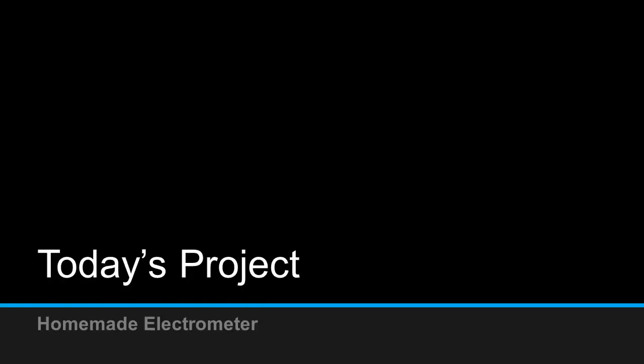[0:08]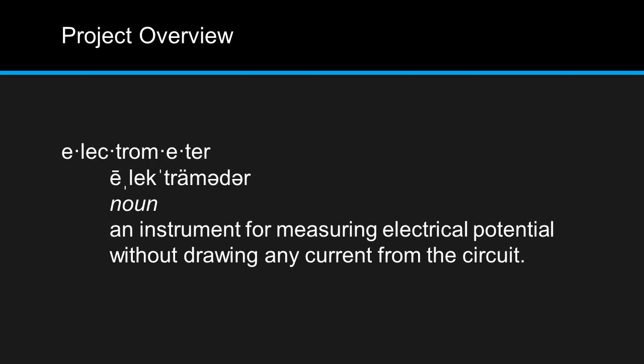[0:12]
Today's project will be a homemade electrometer. An electrometer is an instrument for measuring electrical potential, or static charge, without drawing any current from the circuit involved.
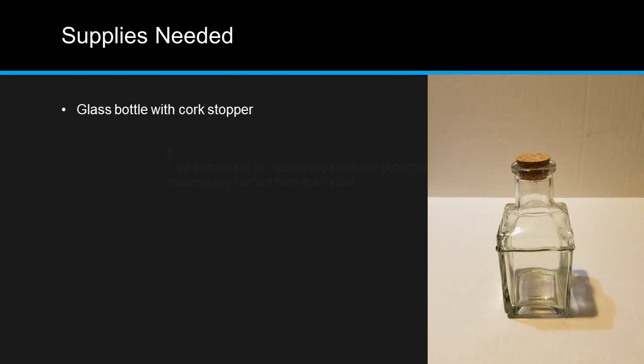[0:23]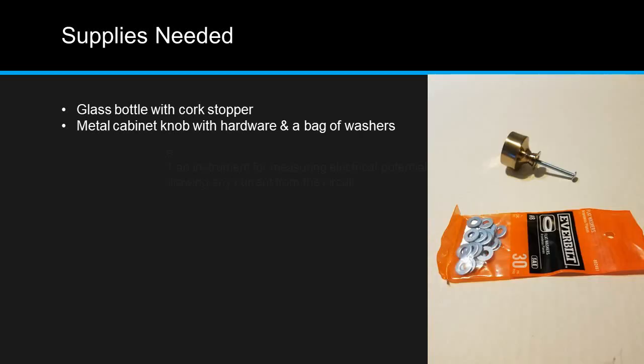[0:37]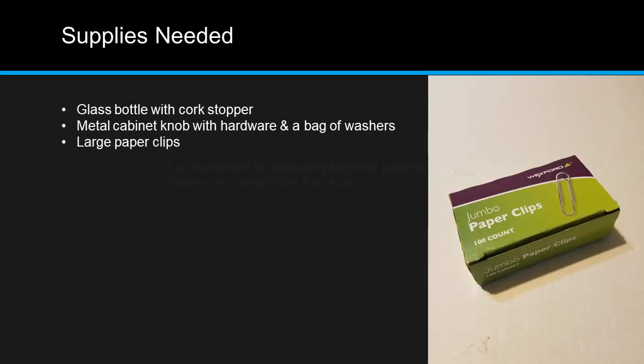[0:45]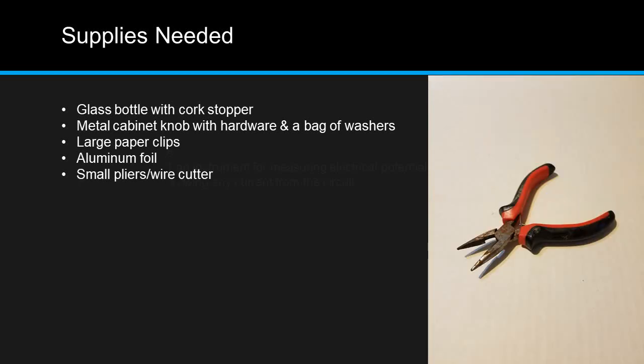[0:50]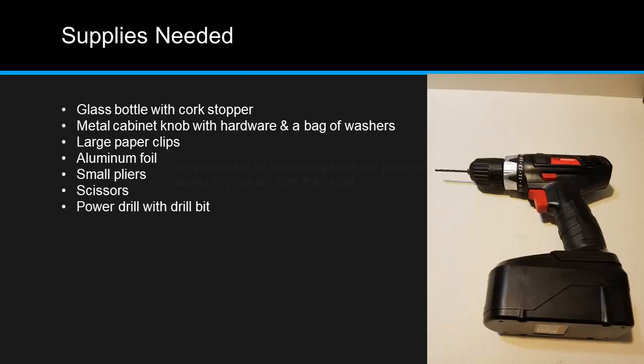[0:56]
The supplies you'll need for this week's experiment are as follows. A glass bottle with a cork stopper. I got this one at a local craft supply store for about $2. A completely metal cabinet knob with its associated screw and a bag of washers. Some large paper clips. Some aluminum foil. Small pliers with a wire cutter. Scissors. A power drill with a drill bit slightly larger than the screw that came with the cabinet knob.
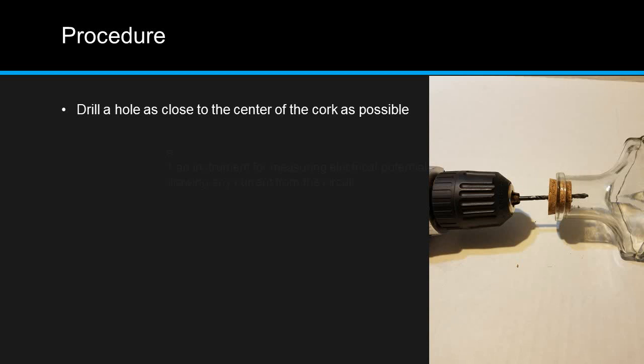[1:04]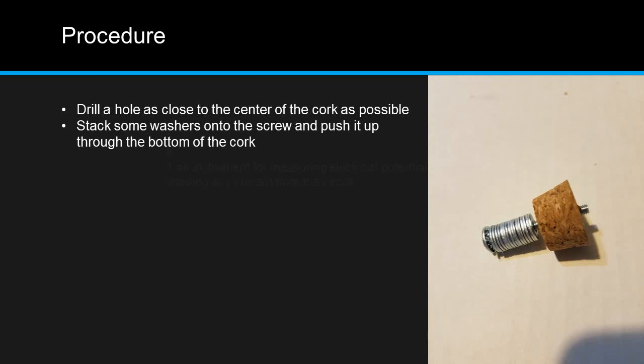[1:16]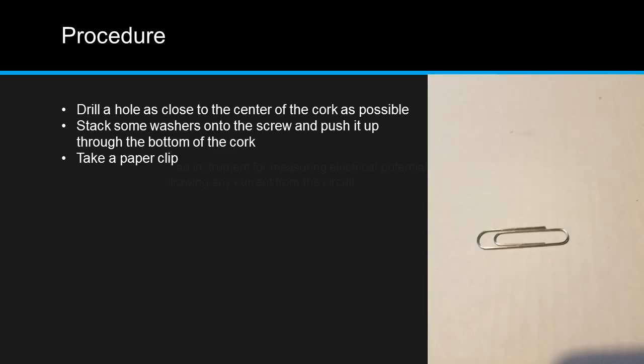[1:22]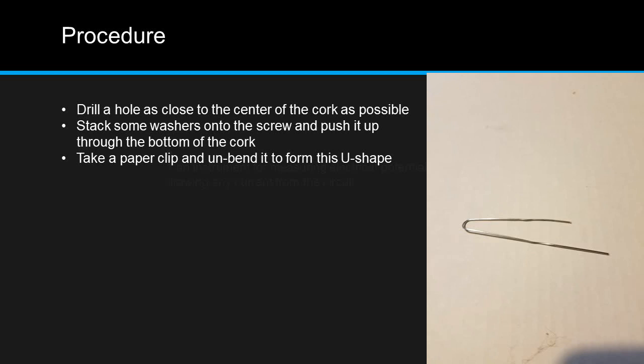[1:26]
Okay, let's get building. After putting on your safety glasses, use the power drill to drill a hole as close to the center of the cork as possible. Stack some washers onto the screw that came with the knob and push it up through the bottom of the cork. Take one of your paper clips and unbend it to form this U shape.
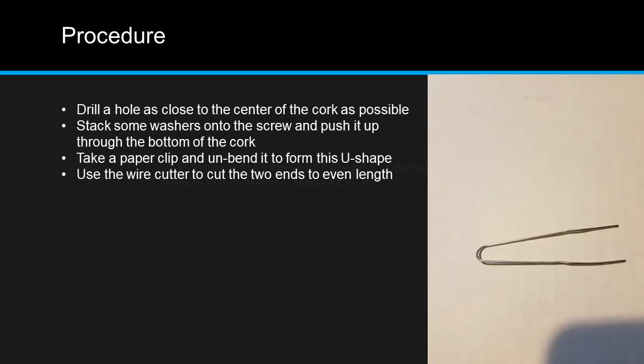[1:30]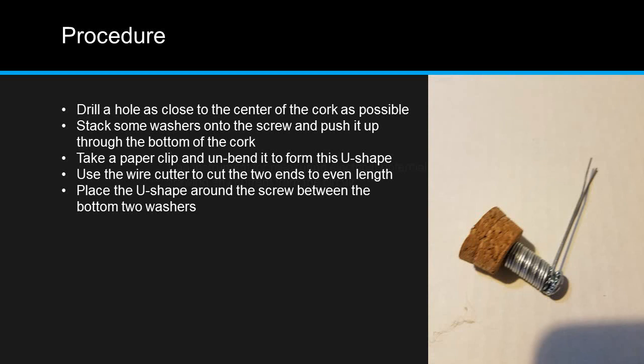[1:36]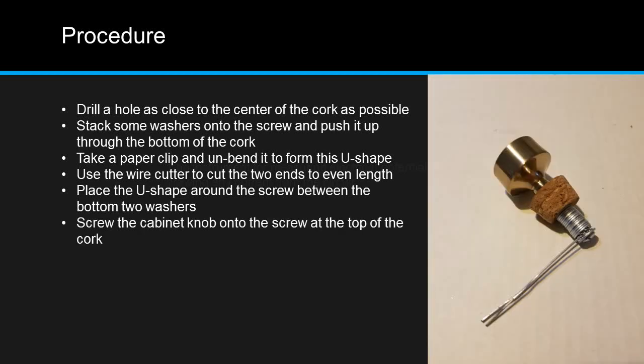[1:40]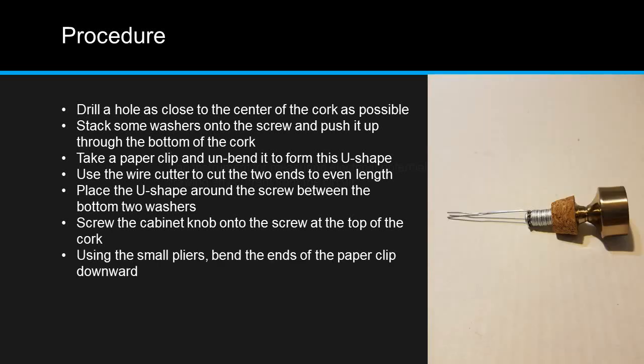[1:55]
Use the wire cutter on the pliers to cut the two ends to an even length. Place this U shape around the screw between the bottom two washers. Screw the cabinet knob onto the screw at the top end of the cork. Tighten it so that it holds the paper clip at the bottom firmly, but not so tight that it deforms the cork. Using the small pliers, bend the ends of the paper clip straight downward.
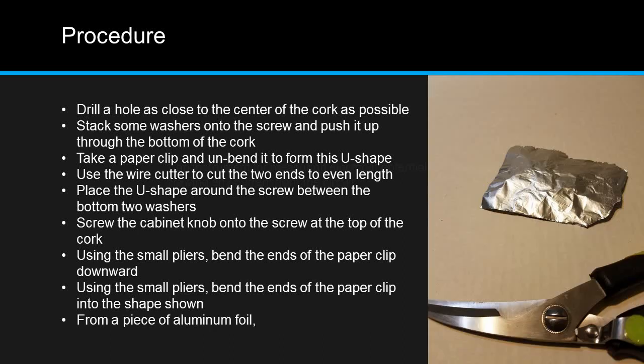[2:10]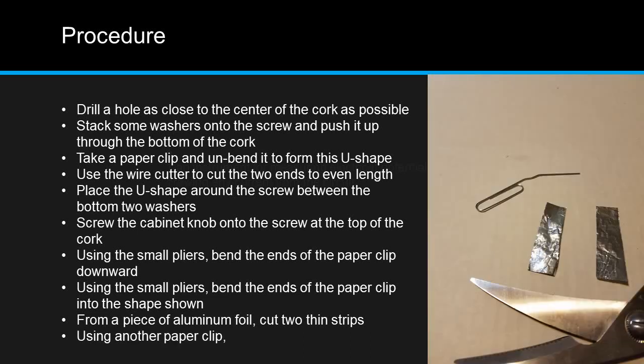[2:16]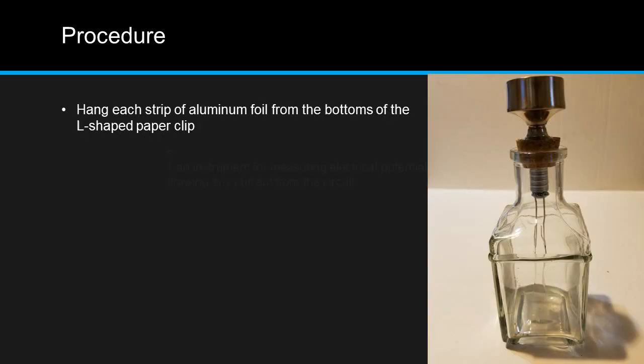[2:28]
Again, using the small pliers, bend the ends of the paperclip into the L shape shown in the photograph. Take a piece of aluminum foil and cut two thin strips, about 2 inches long. Using another paperclip, fold over the top 1/4 inch of each of the aluminum foil strips. This will be the hinge that these strips will swing on. Hang each strip of aluminum foil from the bottoms of the L-shaped paperclip.
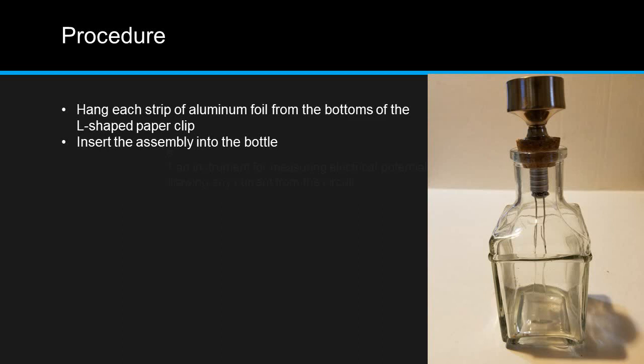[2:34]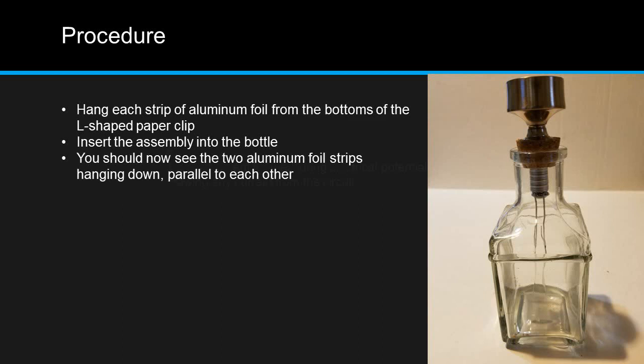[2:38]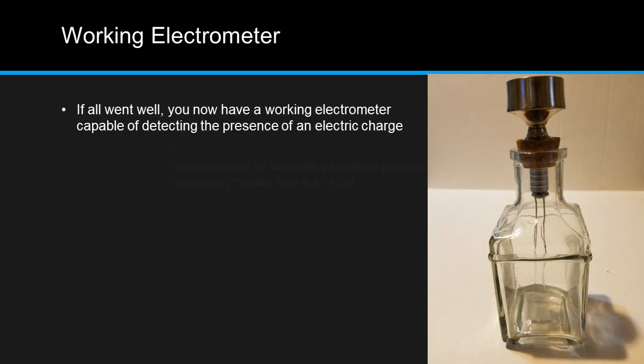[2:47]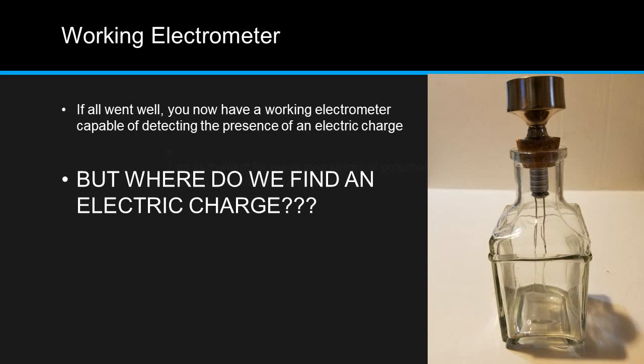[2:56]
Then insert the entire assembly into the bottle. You should now see the two aluminum foil strips hanging straight down, parallel to each other. If all went well, you now have a working electrometer capable of detecting the presence of an electric charge. But where do we find an electric charge?
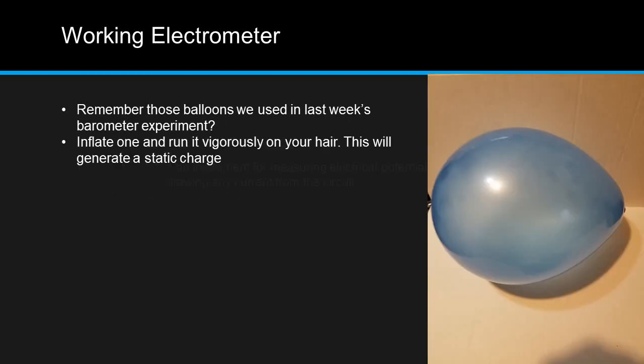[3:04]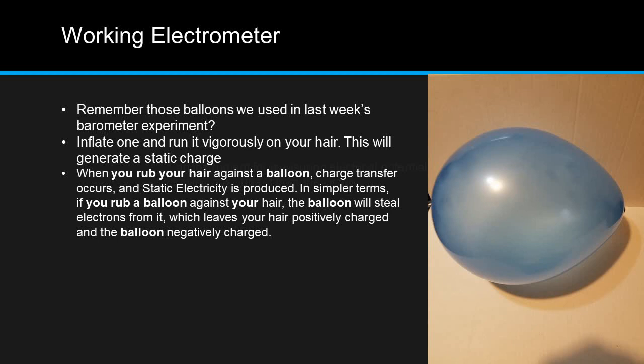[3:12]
Remember those balloons we used in last week's barometer experiment? Inflate one and run it vigorously back and forth across your hair. This will generate a static charge. When you rub your hair against a balloon, charge transfer occurs and static electricity is produced. In simpler terms, if you rub a balloon against your hair, the balloon will steal electrons from it, which leaves your hair positively charged and the balloon negatively charged.
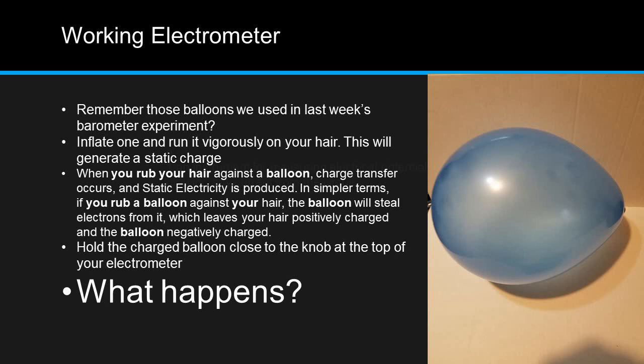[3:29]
Hold the charged balloon close to the knob at the top of your electrometer. What happens? Record what happens and leave it in the comments below.